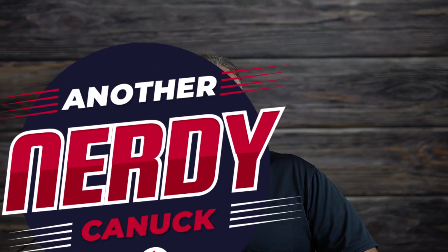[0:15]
Hey everyone, today I'm going to show you how my DIY battery was able to triple the range of my daughter's electric wheelchair. I'll cover the design, build, and install of the battery, and then I'll open it up after 2 years of use to see how it looks as I move it into her new wheelchair.
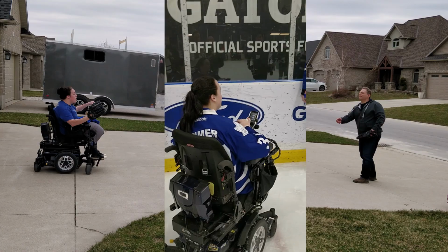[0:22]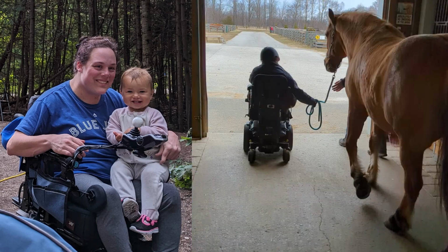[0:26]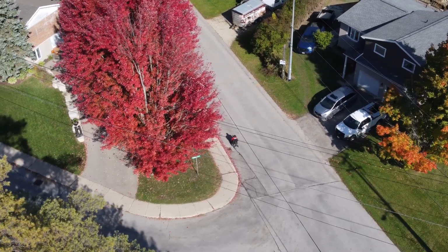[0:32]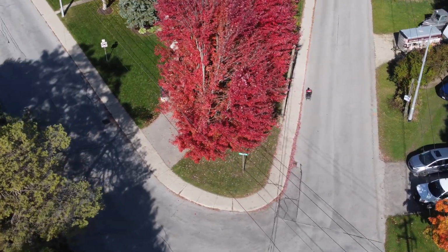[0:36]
My daughter, Jessica, has been using a Quantum Edge 2 iLevel wheelchair for the past 4 years. Although we love the chair and how it improves her life, its most significant drawback is the relatively short range. Jessica loves to get out and drive into town. For her, a typical trip into town and back is about 8 kilometers or 5 miles.
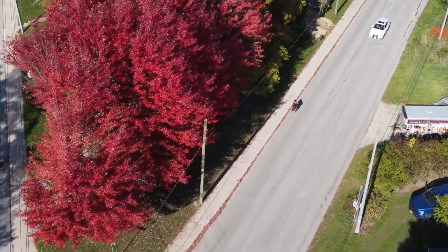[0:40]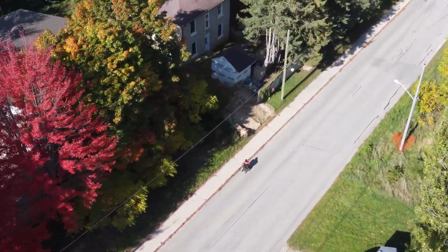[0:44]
Even with a brand new set of the recommended AGM-style batteries, a trip like that will use up 50% of her battery capacity. Part of the problem is that we live on a hill at the edge of town. Now, the owner's manual suggests that we plan your trip in advance to avoid inclines, but there's no way for her to avoid the 30 meter or about 100 foot change in elevation between our house and downtown.
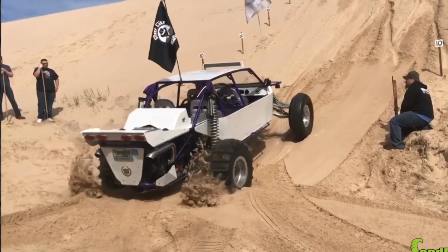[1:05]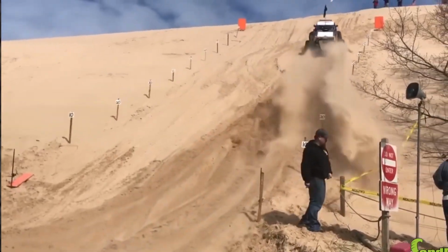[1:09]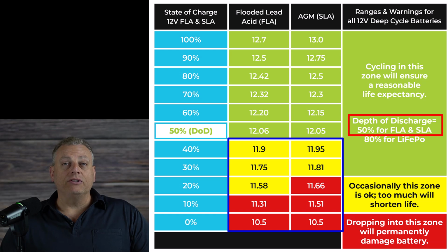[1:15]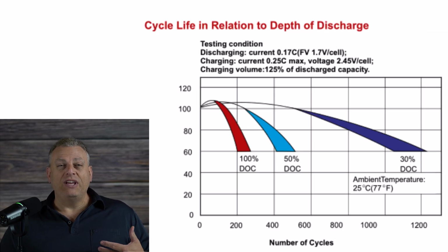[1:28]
The way back up is all uphill, and it was not uncommon for her to receive undervoltage warnings on the way home. This 50% depth of discharge is the maximum recommended level for lead acid batteries, and that doesn't leave any range for the whole rest of her daily activities. This makes her real world driving range about 8 kilometers on a single charge, and that is with brand new batteries. As the batteries age, the capacity reduces significantly.
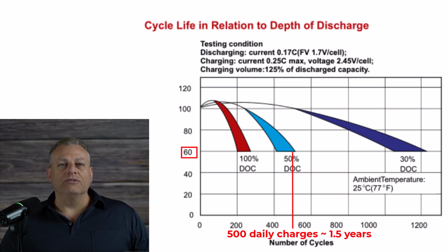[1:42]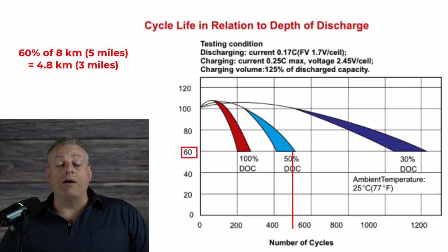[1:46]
If we look at the cycle life chart for lead acid batteries, daily charging at 50% depth of discharge is going to degrade her range down to 60% in less than 2 years. With older batteries, it is not uncommon that her chair would just stop functioning on the way home, and we would need to go pick her up with our wheelchair van.
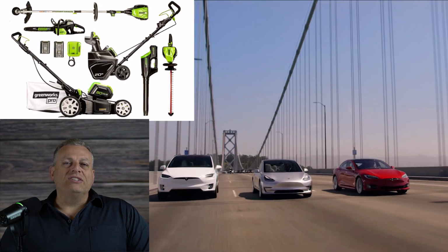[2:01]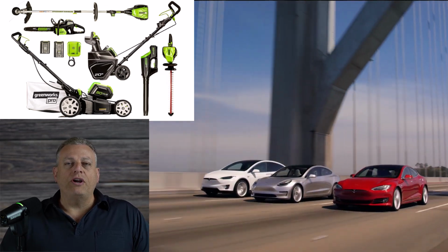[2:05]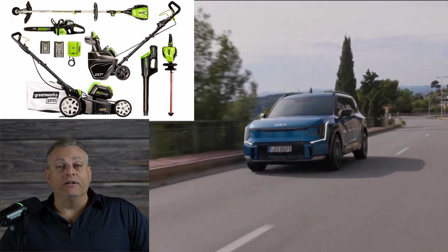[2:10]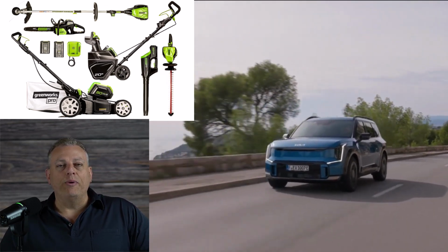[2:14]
Even though we worked with our local medical supply company and their amazing technicians to try and solve this problem, there didn't seem to be any way around this battery limitation. With the extensive use of lithium-based batteries to power cars and lawn care equipment, we tried to find a lithium-based wheelchair battery, but no one seems to make them. Apparently, the scooter and wheelchair industry has not seen a need to adopt the new battery chemistries that are available. Sorry, rant finished. Anyway, since we couldn't purchase them, I decided to try and build one on my own.
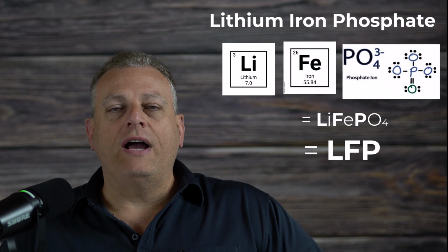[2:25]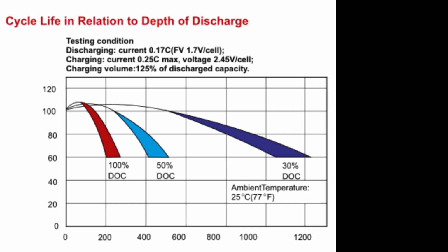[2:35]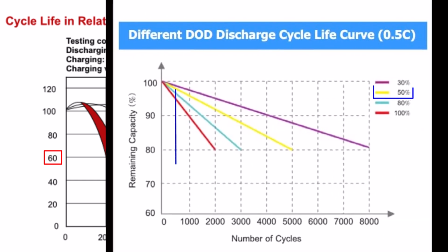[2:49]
After some research, I decided that lithium iron phosphate or LFP batteries would be the best choice. They have a much better energy density and can support a greater depth of discharge. Check out the cycle life of an LFP battery compared to the AGM we looked at earlier. If we estimate a daily discharge of 50%, after 1.5 years or just over 500 daily charges, you can see the AGM-style batteries are down to 60% of their original capacity, but the LFP batteries are still at 97%.
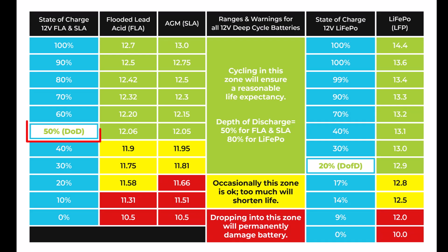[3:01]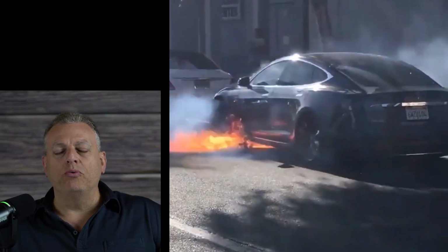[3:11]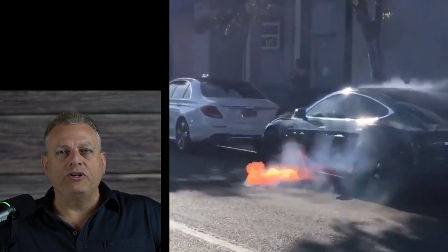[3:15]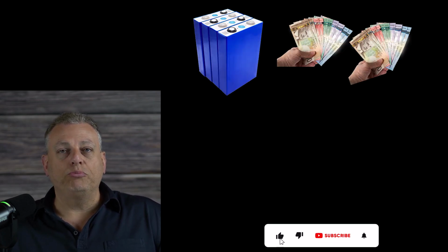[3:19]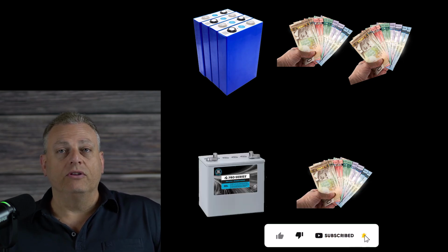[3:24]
This will make a huge difference on how far my daughter can drive, especially after the batteries have aged a bit. The other major benefit of the LFP batteries is the ability to discharge down to 20% capacity without damaging them. I did avoid the lithium-ion or ternary-style battery. Those are the ones that are prone to thermal runaway and a fire risk. The lithium iron phosphate batteries are much safer. The only real disadvantage of lithium iron phosphate batteries is the initial purchase price. However, because they last so long, they're actually cheaper in the long run.
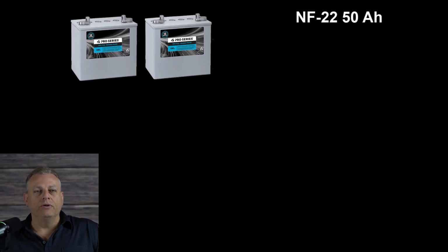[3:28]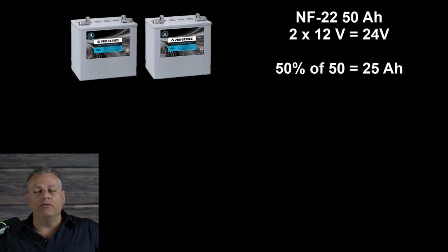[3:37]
The recommended batteries for my daughter's Edge 2 wheelchair are 2 50 amp hour NF22 batteries that are connected in series to create a 24 volt battery. Using the recommended discharge of only 50%, this leaves about 25 amp hours of usable capacity. At the normal operating voltage, this is about 600 watt-hours of available energy.
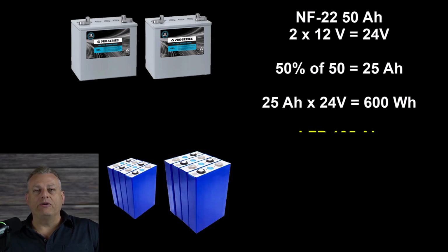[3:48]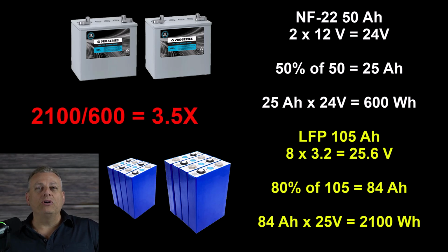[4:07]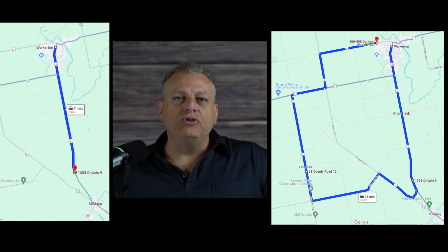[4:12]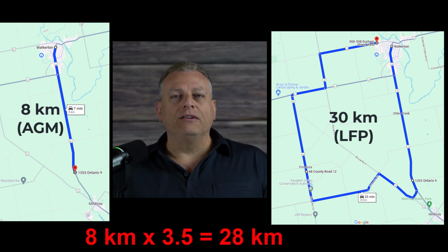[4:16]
My plan is to build a battery from 8 105 amp-hour 3.2 volt lithium iron phosphate batteries connected in series to create a 25.6 volt battery. If we allow for 80% discharge, this 84 amp-hours of available energy at 25 volts works out to 2,100 watt-hours of energy. This is over 3.5 times more usable energy per charge than the recommended batteries. This almost seems too good to be true, but I can confirm that these batteries are actually able to do that. Jessica is able to travel over 30 real-world kilometers or about 19 miles on a charge.
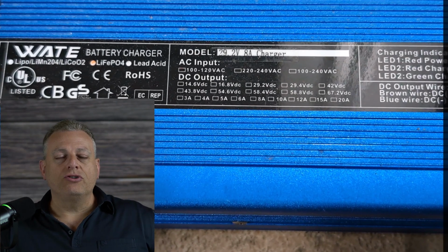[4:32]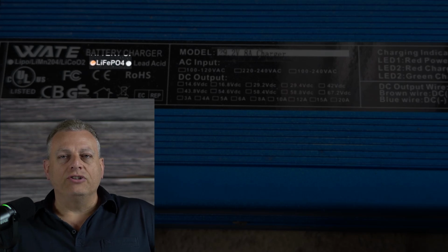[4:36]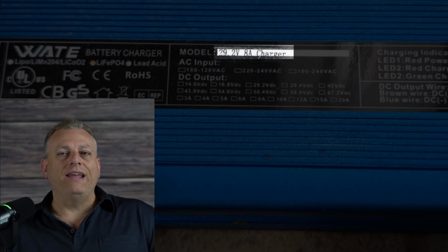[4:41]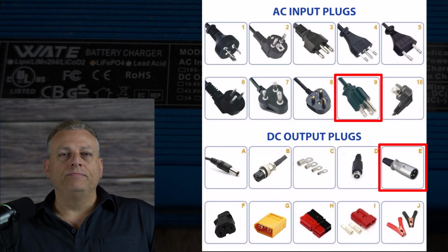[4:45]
This has been so liberating for her. I have to admit I'm a little bit frustrated that the industry has not embraced this technology yet. Another important part of the switchover is to get a charger that is designed for LFP batteries. The onboard chair charging connection is only rated for 8 amps, so I purchased an LFP battery charger with an 8 amp charge current rating and the XLR connector used on her chair. This keeps the functionality of the wheelchair the same for my daughter.
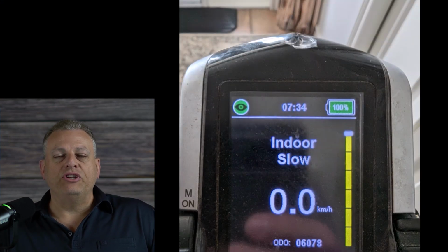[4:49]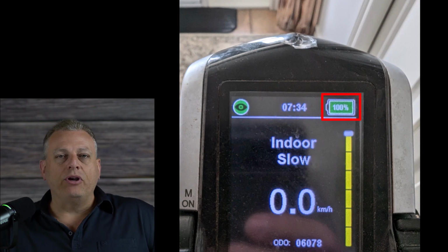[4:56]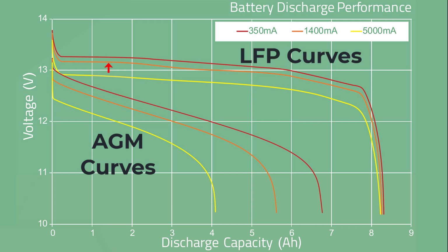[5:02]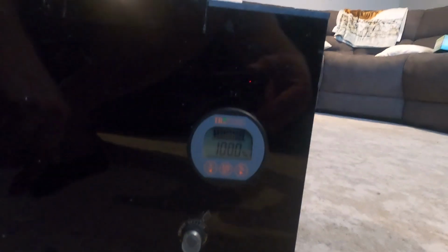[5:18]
One of the downsides of this battery replacement is the built-in battery indicator in the chair controller is voltage-based. The LFP battery operates at a slightly higher voltage than this indicator was designed for. Also, the LFP discharge curve does not work well with a voltage-based indicator. The voltage remains relatively unchanged during the majority of the discharge, as you can see here. I will add a proper capacity meter on the battery. This will be less visible to my daughter when operating the chair, but we have actually found out that, the available range being so large, this hasn't actually been a problem.
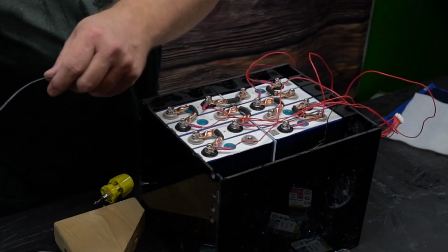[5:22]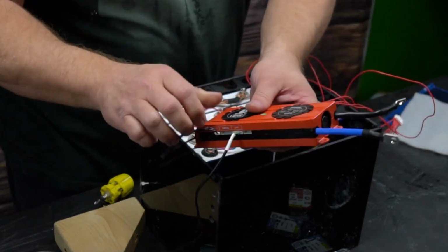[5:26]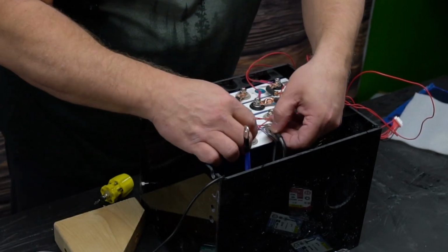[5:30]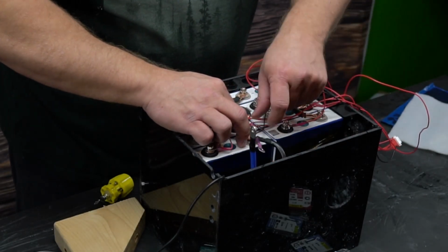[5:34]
To monitor and protect the individual LFP cells, I will use a battery management system, or BMS. This is necessary to ensure that no cells are damaged by overcharging or draining too low. It will also allow me to monitor the health of the cells over the years. One final design element, I will add a USB phone charging plug so that she can ensure her cell phone is always charged if she is out and about and her phone battery gets low. For this, I purchased an inexpensive 24-volt to 5-volt DC converter.
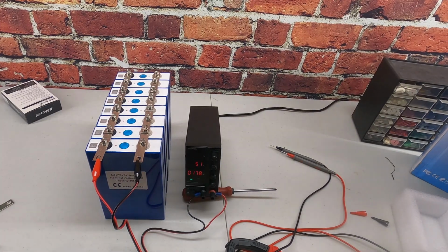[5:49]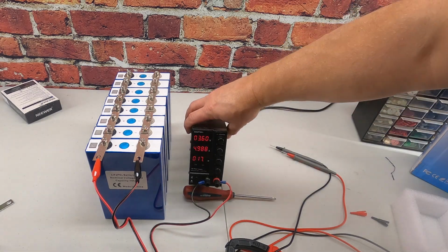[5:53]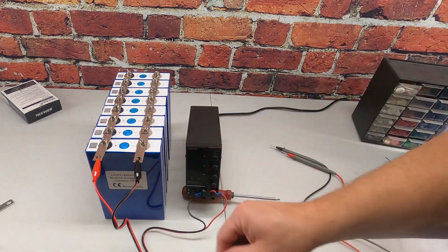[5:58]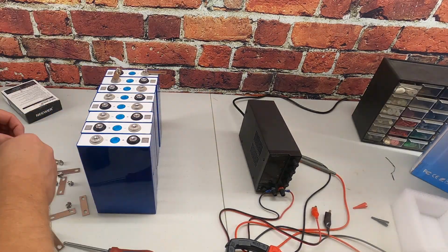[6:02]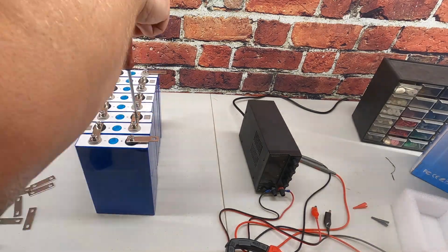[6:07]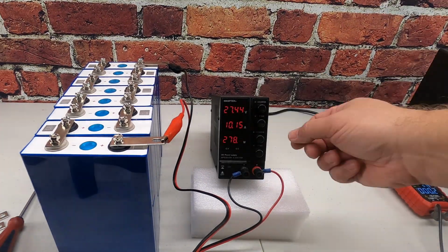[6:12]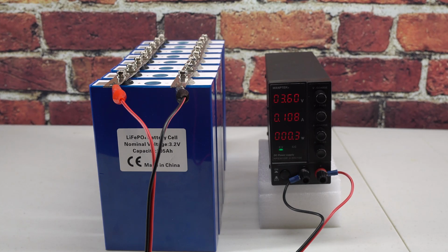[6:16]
Once I receive the cells, I top balance them to 100% or 3.65 volts. This is an important step to ensure that all of the cells start at the same charge level. Since they should all charge and discharge at about the same rate, this should keep them all at about the same state of charge. I initially started by balancing all of them in parallel, but this was taking way too long. To speed things up, I temporarily connected them in series and regularly monitored the voltage of each cell. Once the highest voltage started to get close to 3.5 volts, I reconnected them in parallel to finish the top balancing. This whole process took about a week.
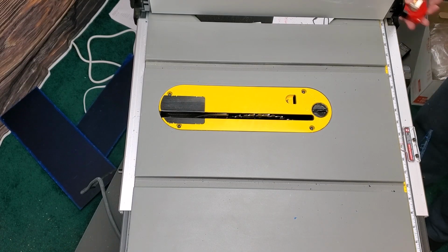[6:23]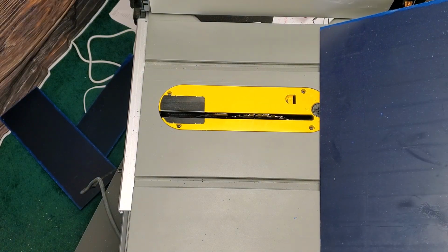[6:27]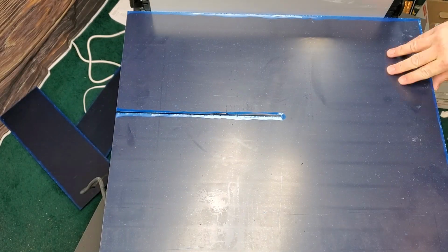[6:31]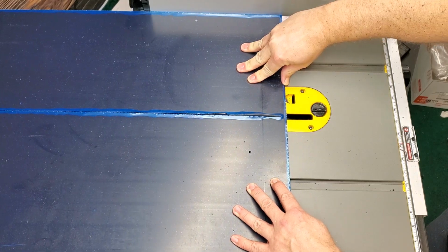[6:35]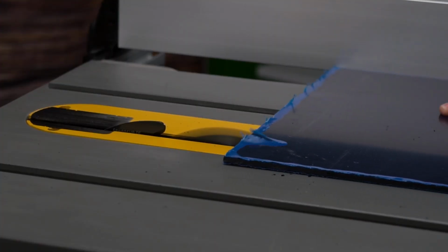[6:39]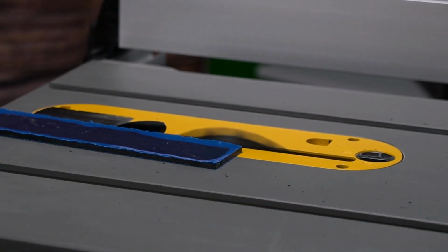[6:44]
I built a battery box out of 4.5 millimeter or 3/16 inch acrylic to protect the cells and the electronics from the weather. I measured the internal space available in the chair for batteries to make the box as large as I could. This would give me maximum volume to work with and minimize how much sliding around the assembled battery case could do. It is essentially the size of the pair of recommended batteries and just a bit taller.
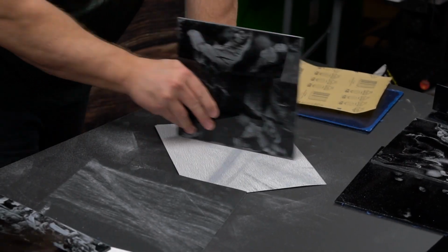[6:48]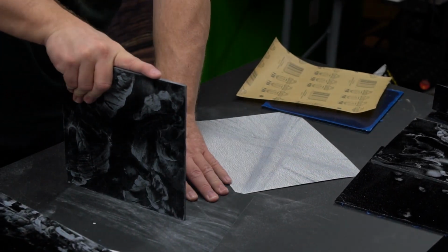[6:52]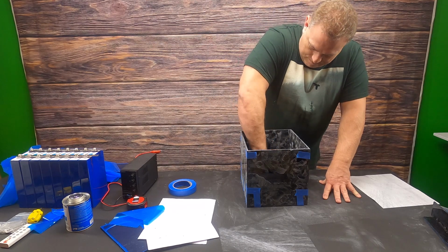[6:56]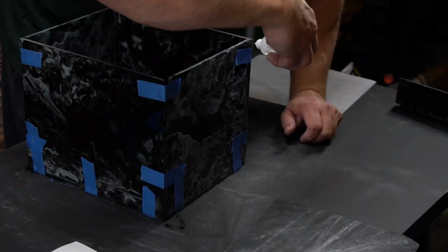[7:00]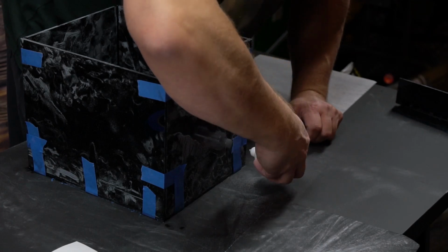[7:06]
I used my table saw to cut all the various pieces and then sanded the edges smooth. This is important as I am using a solvent to weld the pieces together. I used some painter's tape to hold the box together and used a small dispenser for the solvent. It quickly ran into the spaces between the pieces and created a structural and waterproof connection. Since the box is mostly hidden, I didn't really make any effort to make it aesthetically pleasing.
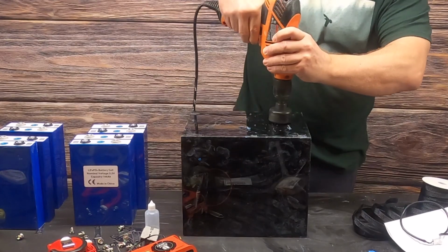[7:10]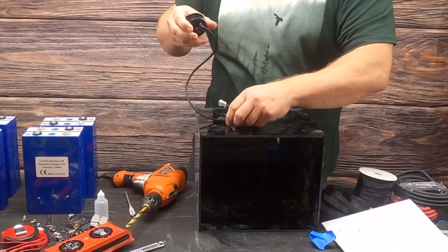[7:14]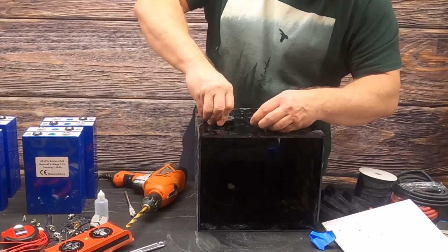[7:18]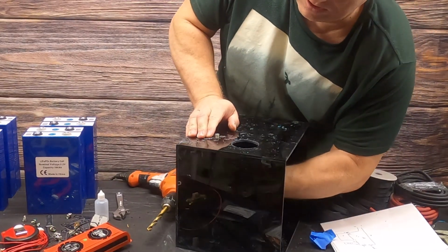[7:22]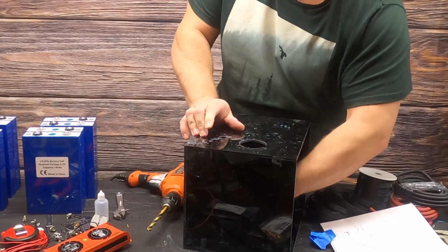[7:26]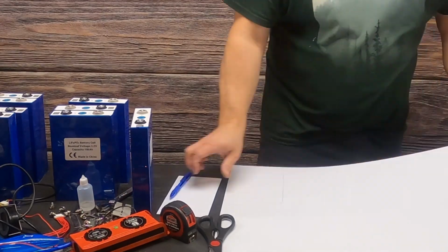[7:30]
Once the box was complete, I test fit the cells to locate some dead space. This space is where the battery management system will go, and I drilled two holes, one for the 70 amp circuit breaker and the other one for the battery level monitor. After test fitting the breaker and battery monitor, it was time to start packing the case and wiring the components together. For this style of battery cells, the outside metallic case is electrically connected with one of the terminals.
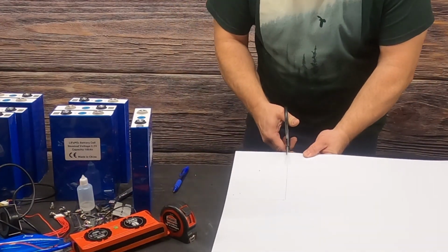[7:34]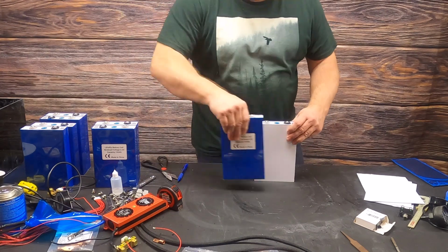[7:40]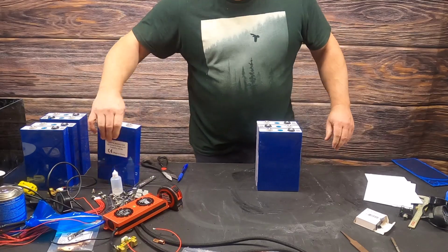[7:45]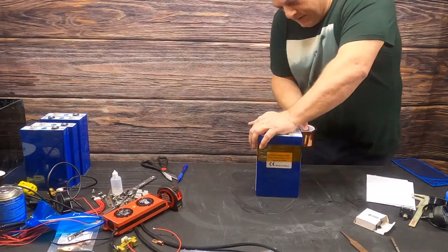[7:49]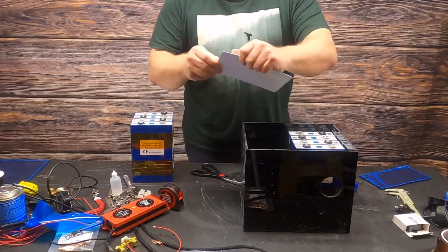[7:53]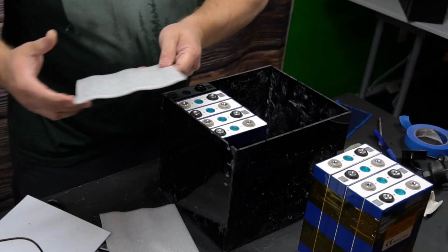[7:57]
The thin blue wrap isn't a robust insulator and wouldn't survive the potential rubbing and vibration of a moving chair. I used a thin sheet of 0.03 inch styrene plastic between the cells to keep them electrically isolated. I marked out an appropriate size on the plastic and cut them out with some scissors. I then taped the cells together with thermal tape in two sets of four and then placed them in the acrylic box. I also added a styrene divider where the ends of my cells could possibly rub.
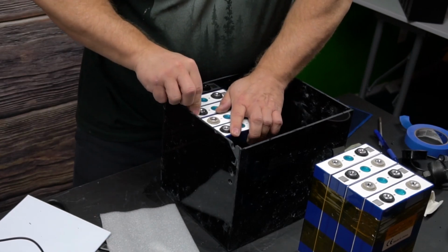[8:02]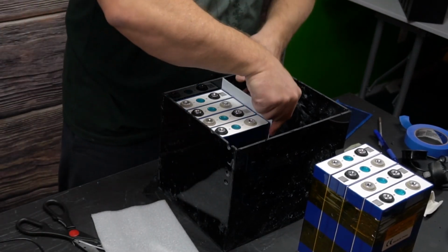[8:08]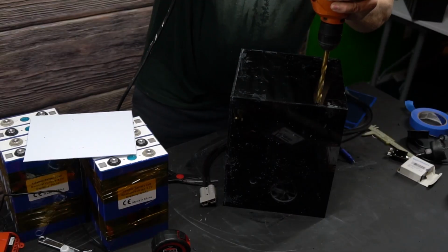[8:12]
After test fitting, I noticed it was almost a snug fit, so I grabbed a thin sheet of some soft packing foam to ensure that it would be nice and tight so that the cells would be very unlikely to move. I located where the wires for connecting the chair would leave the battery and drilled some holes for the wires to exit from.
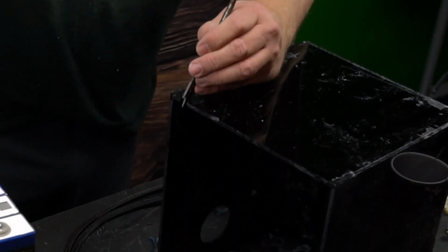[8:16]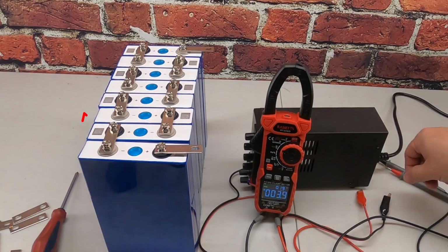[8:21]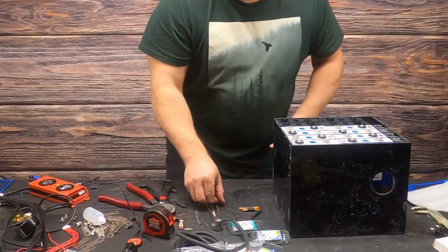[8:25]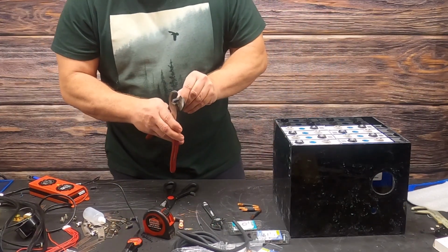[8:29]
I then added a notch at the top for the USB port and the BMS Bluetooth dongle. Originally, I was going to use the bus bars that came with my cells to connect them. However, I thought it might extend the life of the battery to use a more flexible option connecting the cells to prevent putting any strain on the terminals.
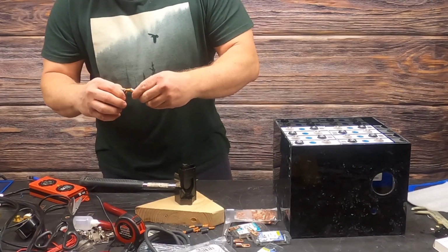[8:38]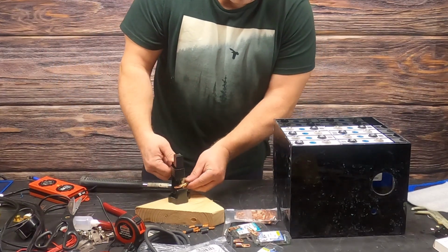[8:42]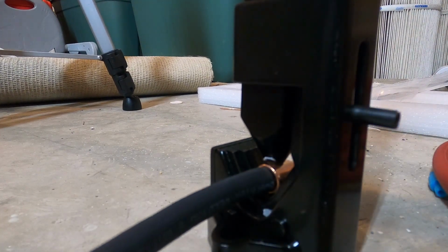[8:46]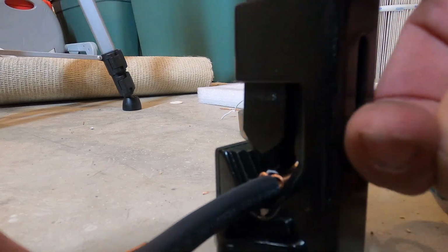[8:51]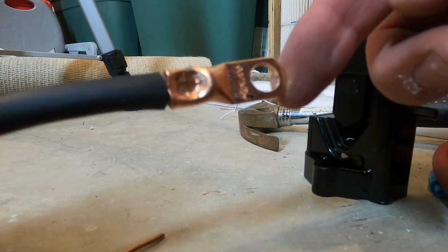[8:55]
I made all of the jumpers by crimping terminals on the ends of some 4-gauge wire with a hammer crimper. I tried to do one for the video camera on my work table, but I couldn't strike it hard enough to actually set the crimp. For all of my crimps, I used my hammer crimper set on the basement concrete floor, and I did all the crimps for this project off camera. However, here's a clip of a hammer crimp made during the install of my DIY home battery backup.
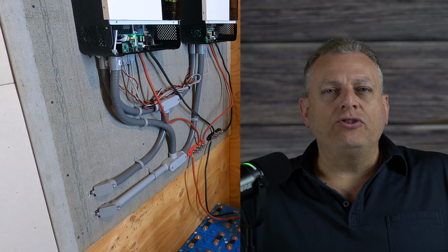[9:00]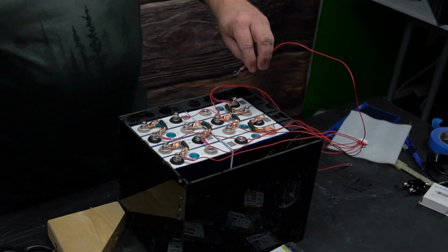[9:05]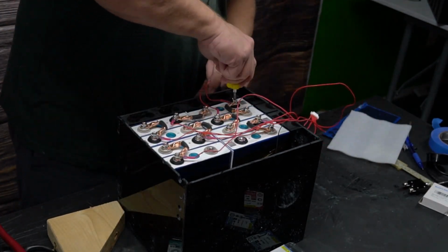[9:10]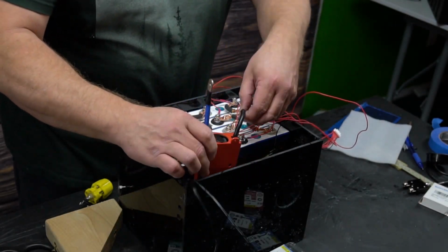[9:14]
As I placed all the connectors, I included the BMS system connections at the positive terminals of each cell. Once they were all tightened in place, I connected the BMS wire to the negative terminal and plugged in the terminal connectors.
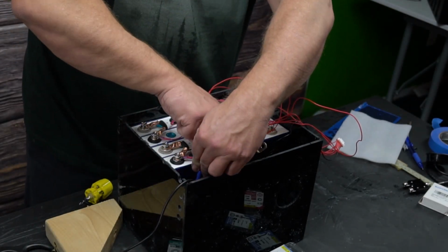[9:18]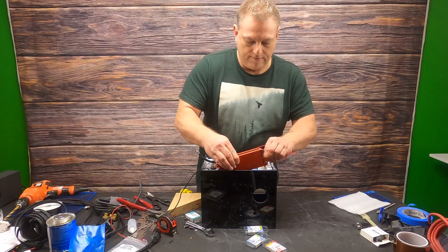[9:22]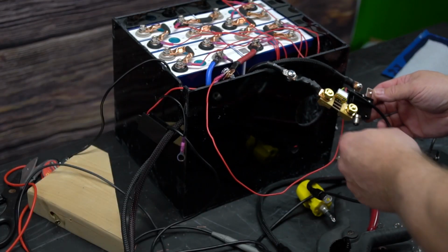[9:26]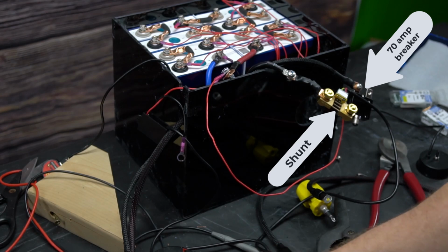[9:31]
After verifying voltage on the BMS to ensure it was working, I added the shunt for the battery monitor and the 70 amp breaker. I did end up making a small extension cable for the BMS wire. The included wire was just a bit short to work with, and it made connecting the shunt a bit easier.
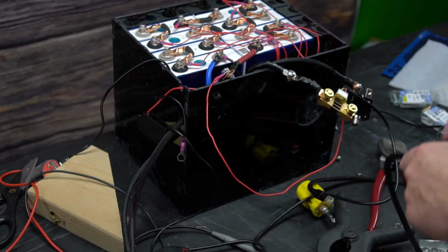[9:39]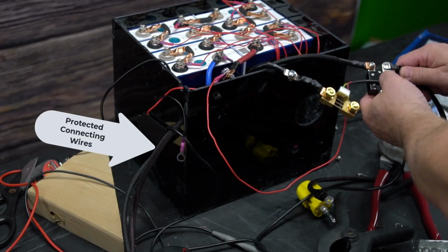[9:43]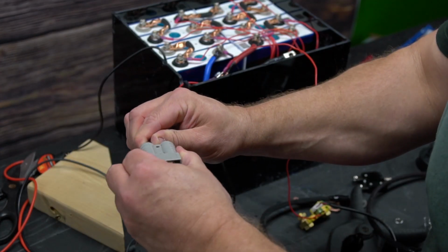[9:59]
As I neared the end, I added the Anderson connector wires exiting the battery to plug into the chair connector. These wires were a 6-gauge stranded battery wire. This was the same size wire the manufacturer had used, so I figured it should be good. I protected the wire with some of the same braided cable sleeve used by the manufacturer. Once I had wired it to the shunt, I crimped on the Anderson SB50 terminals and placed and installed the
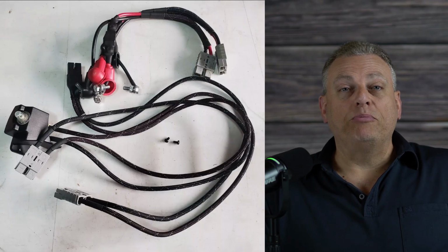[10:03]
Anderson connector. To ensure I could swap out the battery as quickly as possible, I did purchase a spare wiring harness for the chair. This was not necessary, but gave me some peace of mind that I could switch out as quickly as possible. Also, if the swap went badly, I could just reconnect the original wiring and battery so my daughter could stay mobile. Fortunately, everything went well, and this precaution was not needed.
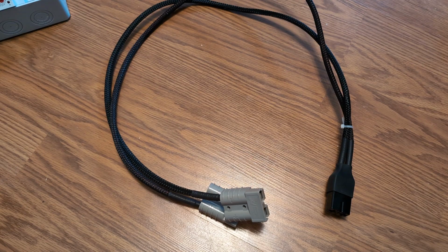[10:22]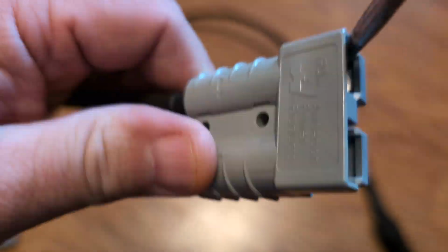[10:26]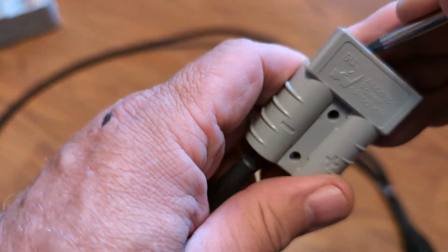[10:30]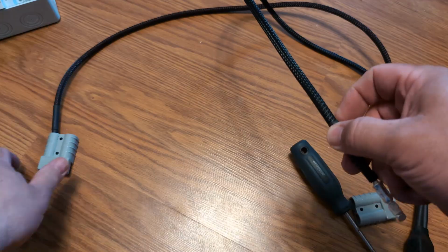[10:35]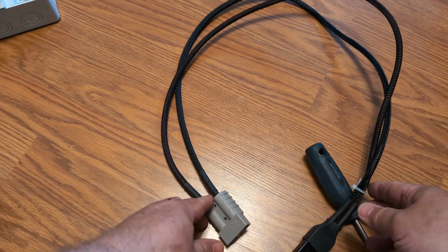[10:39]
To convert the chair connection wiring harness to fit my 24-volt battery, I simply needed to adjust the Anderson SB50 connectors. I love the Anderson-style connectors because they are relatively easy to disconnect the terminals from the connectors. I just moved the positive and negative terminals coming from the proprietary chair connector to a single Anderson connector.
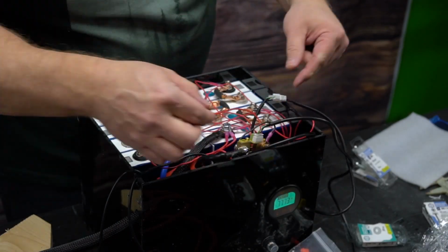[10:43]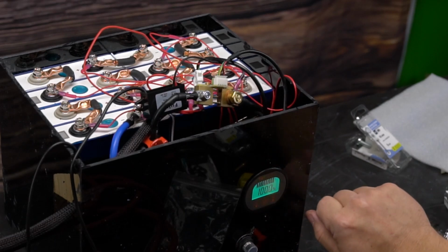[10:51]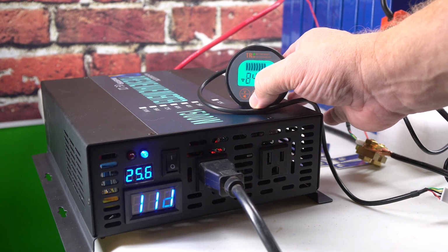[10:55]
After mounting the battery monitor, I connected it to the shunt and everything seemed to be working. I set the amp hour capacity as per the instructions, and since the batteries had all been top balanced and were full, I set the battery monitor to read 100%. The battery monitor was already set to the 105 amp hour capacity of my battery cells. I did this during a test I ran during the initial setup to make sure everything was working before I packed the cells into the case.
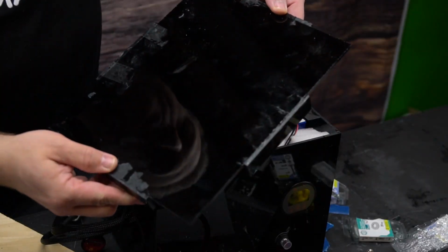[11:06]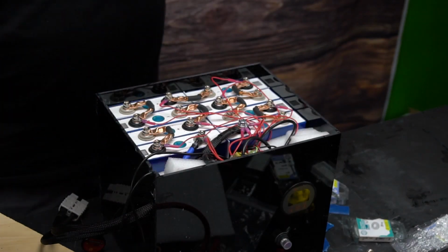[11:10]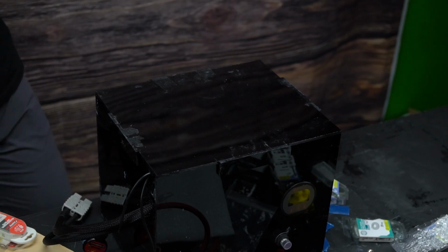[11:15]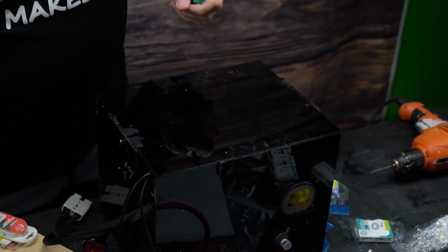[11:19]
Once the wires were all packed into the remaining space, I just needed to add the lid. The whole battery is pretty well protected by the chair structure, so for the lid I just took a flat piece of plastic and welded a small piece on all four sides to keep it centered. I did drill and add a couple of screws to hold it firmly in place. With that, the battery build was complete and it was time for the install.
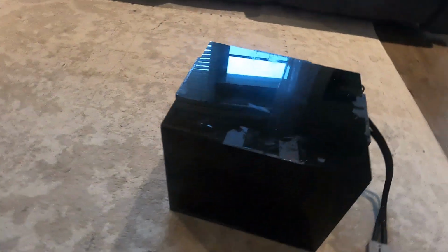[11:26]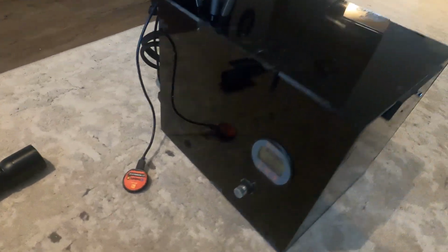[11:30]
Of course, when it was ready to install, it was late in the evening and my daughter had already changed into her PJs. But bless her heart, she agreed to be videoed for the switch out and a quick test. So my daughter, Jessica. Hello. All right, so if you want to go up.
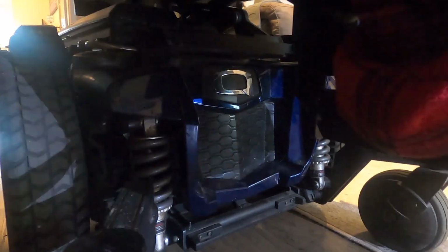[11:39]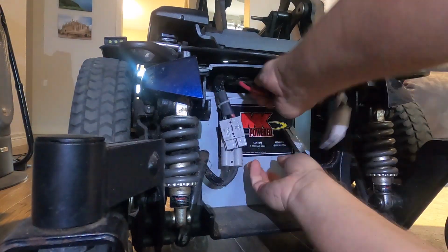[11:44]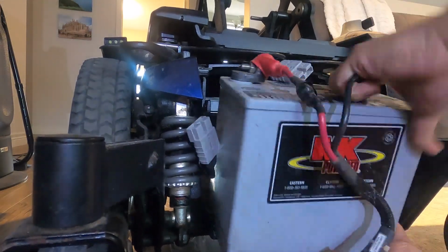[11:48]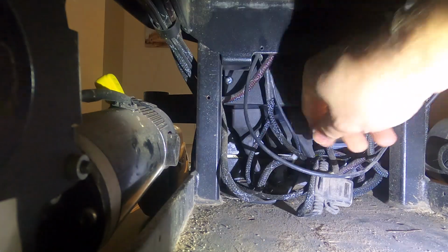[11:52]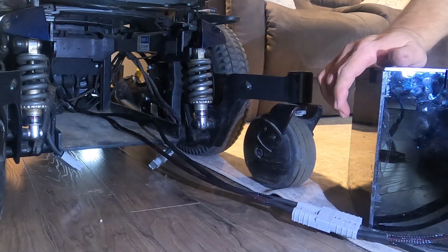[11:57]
I had her use the eye level feature to raise herself up out of the way, and then I took off the front cover of the battery compartment. I disconnected and removed the OEM batteries, but left the original wiring harness in place, just in case it didn't go as planned. I unplugged the original wire harness and plugged in my modified chair connection cable and connected the new battery.
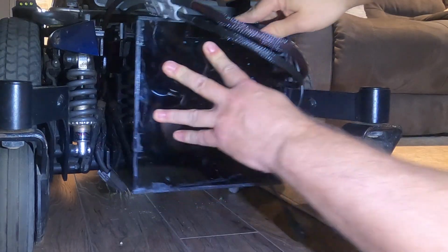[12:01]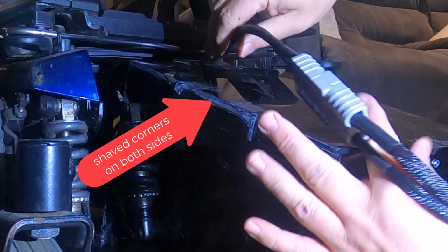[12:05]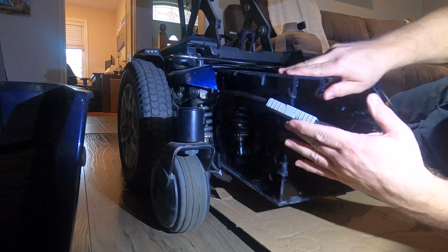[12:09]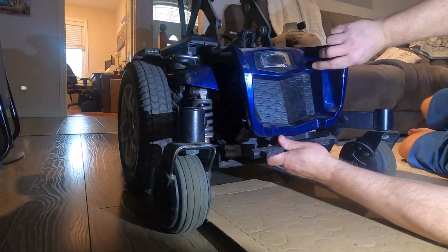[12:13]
Jessica powered up her chair and everything seemed good, so I attempted to slide the battery box in place. After a few attempts, I realized the corner pieces of the lid were bumping into the frame, so I had to shave them down a bit, but after that was able to slide the new battery snugly into place. I put the chair battery cover on and it was time for a quick test.
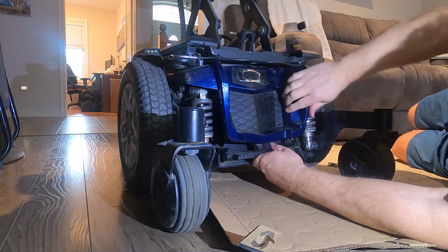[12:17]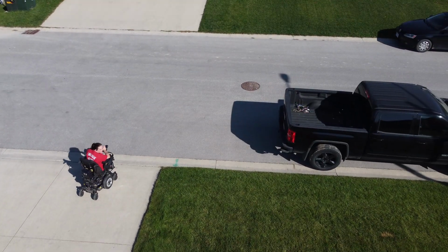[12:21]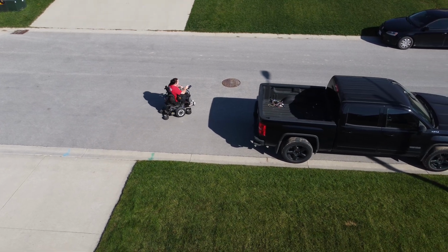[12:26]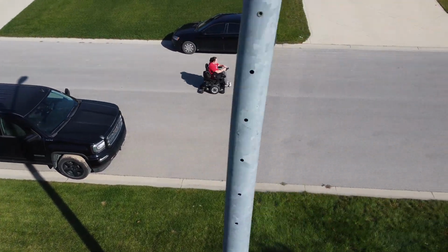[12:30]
She took it outside in the dark and drove it around just a little bit, and everything worked great. The real test came the next day. She took her chair downtown and back and used so little battery we were all shocked. We have found that she can go about 30 real-world kilometers on a charge.
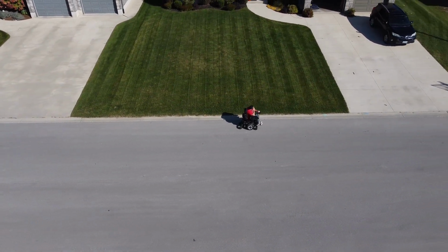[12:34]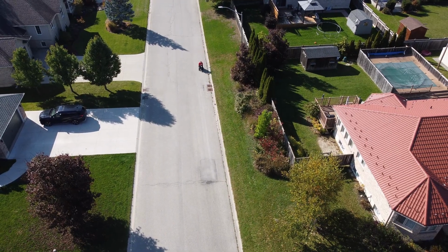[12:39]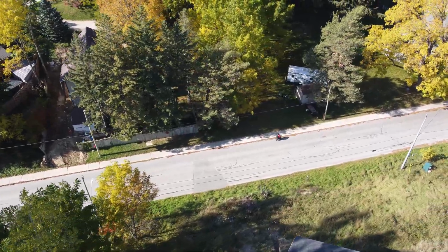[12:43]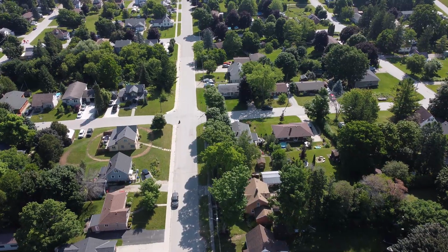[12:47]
This is great because now she never worries about her chair limitations and going downtown, and sometimes even goes twice in a day. She doesn't even charge her chair every night. It is really rewarding to see her live her life without having to even think about running out of battery. All of the footage up to this point is from more than 2 years ago. It is hard to believe it has taken me this long to get this video out.
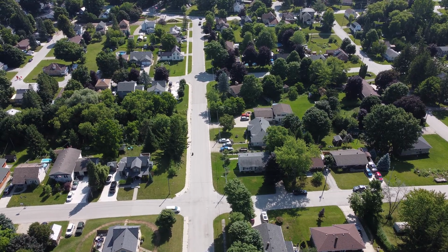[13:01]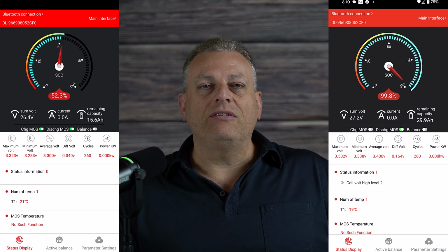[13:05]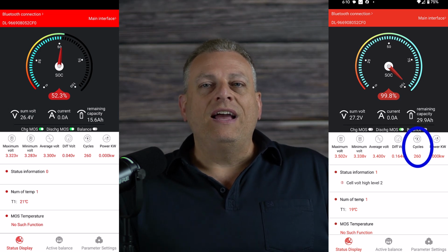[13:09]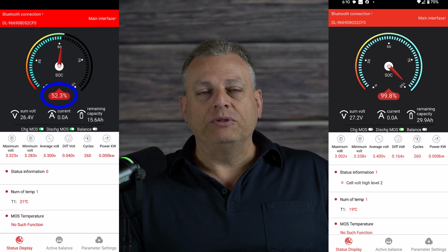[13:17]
Anyway, I am happy to report that this battery is still working just as well today as the day I made it. I have not touched it since it was originally installed. If I log on to the Bluetooth BMS, we can see that there has only been 260 charge cycles so far. At this charging frequency, this battery could last 30 years. You can see on the screen captures taken at two different states of charge. One when the battery was at 52%, the other at 100%.
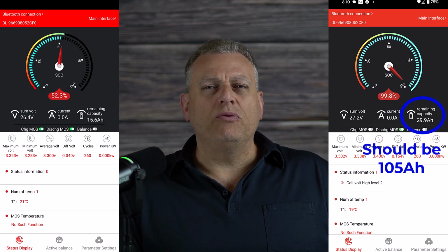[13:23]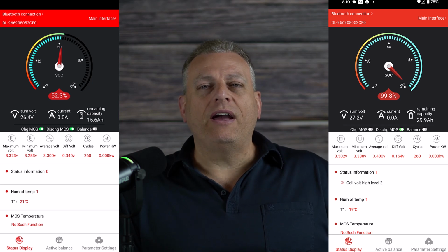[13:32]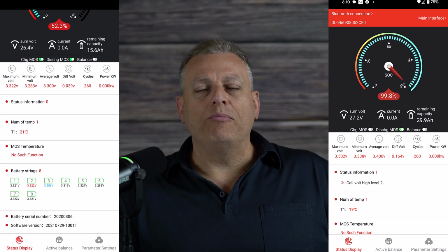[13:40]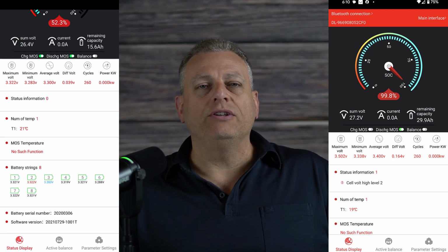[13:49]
I'm not sure why the BMS amp hour capacity is so far off, but the voltages seem a bit out of whack at the upper end with a fairly significant voltage discrepancy. At some point, I will probably either add an active balancer to the cells or replace the BMS with one that has a built-in active balance feature. That way, they are continuously top balanced when we are charging the batteries. I will keep an eye on it, but I don't see any need at this point. The battery capacity is still way more than required for daily use.
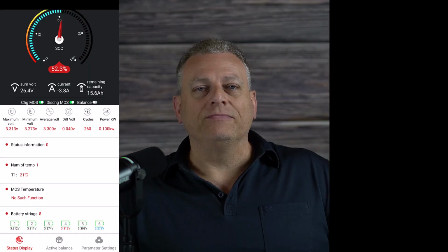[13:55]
Well, her Edge 2.0 wheelchair provided service for over 6.5 total years, so we have just replaced it with a new Edge 3.0 chair. Since the battery still has decades of use left in it, I'm just going to move it over to the new chair. Just out of curiosity, when she took delivery of her new chair, she took a trip to town to see how it would do.
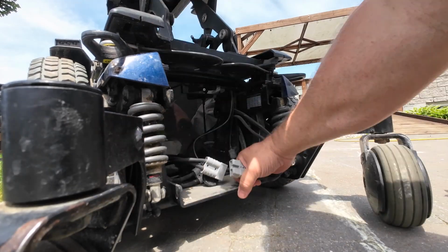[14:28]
After an 8.5-kilometer round trip, the new included batteries were down by 50%, and she was super eager to have the LFP battery moved over to her new chair. The transfer over was pretty straightforward.
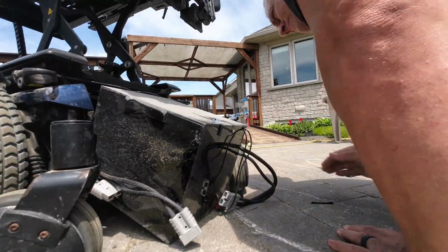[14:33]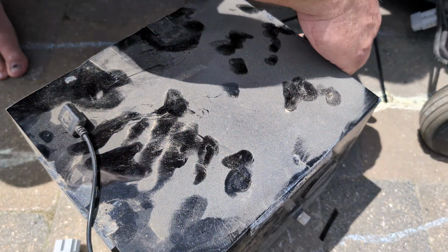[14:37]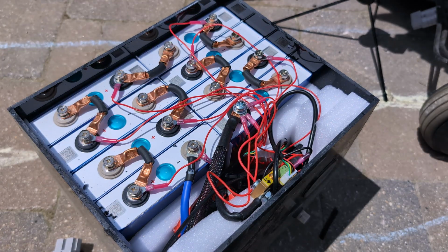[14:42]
I took off the old chair battery cover, disconnected the battery and removed it. I thought it would be good to open it up to see if the weather had had any impact on it in the past 2 years. But as you can see, it looks the same as it did when I first built it.
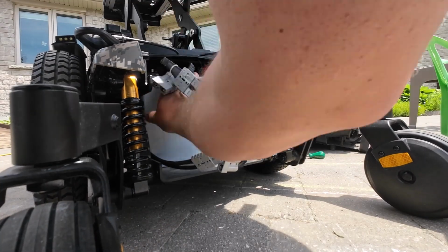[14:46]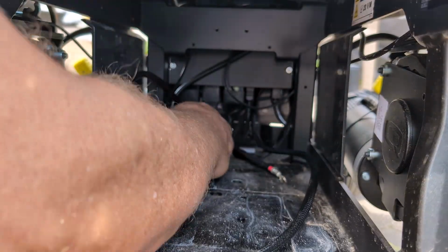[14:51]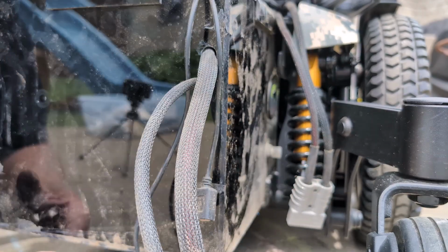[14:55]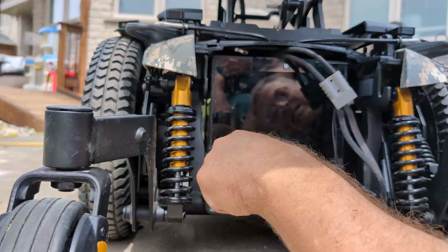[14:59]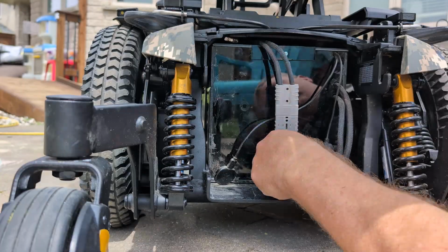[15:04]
In her new chair, I disconnected the included batteries and slid them out. I unplugged and disconnected the original wiring and plugged in my modified chair connection wire. The space in this new model of chair is just a bit narrower than the previous one, so in sliding my battery in, the rubber cover on the circuit breaker did pop off. I connected the battery to the chair, and after confirming it was working, I reinstalled the battery cover.
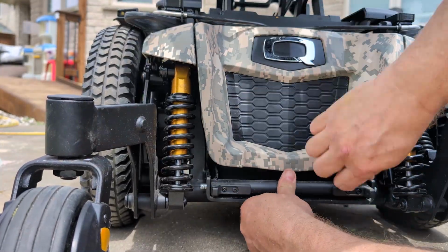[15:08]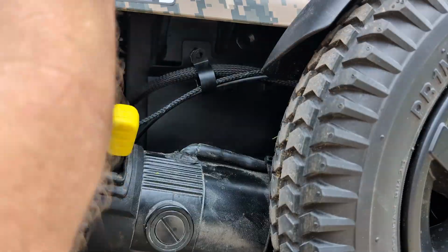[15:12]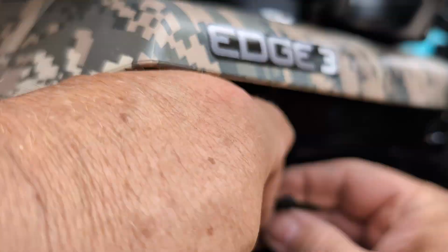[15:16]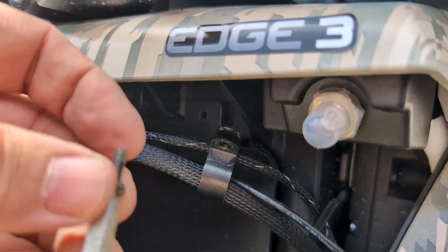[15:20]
The new chair has been working great, and the battery is still going strong. I will probably do another update video in a couple of years, or if I decide to add an active balancer. Working with any form of high-capacity battery can be dangerous, but if you are a competent do-it-yourselfer, this is a project that can really impact someone's independence.
This has been a life-changing experience for my daughter. I'm glad you came along for the ride.